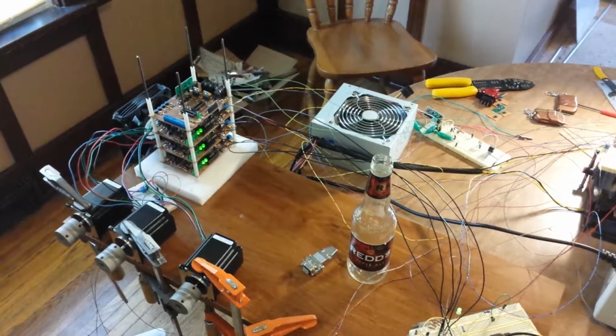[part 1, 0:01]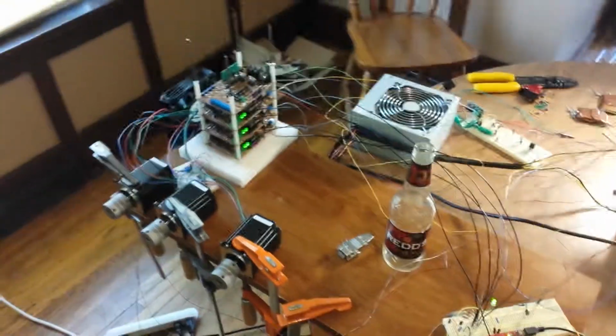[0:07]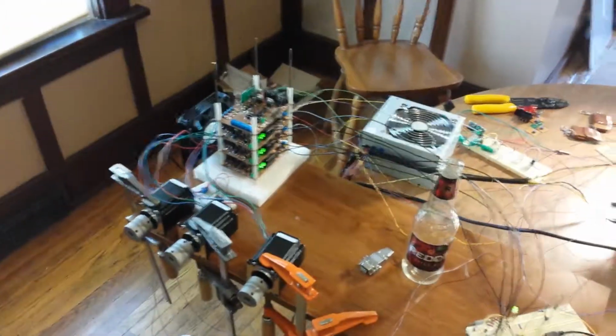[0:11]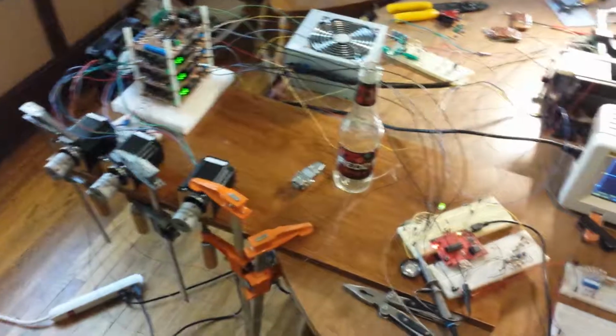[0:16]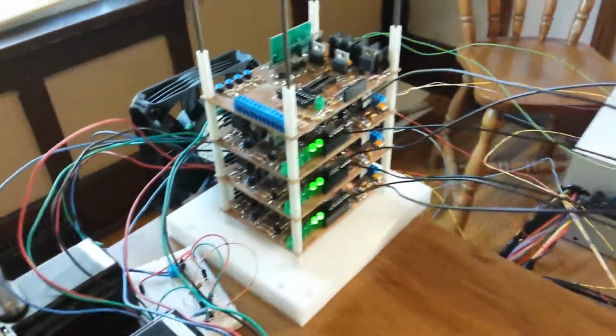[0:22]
All right, here is the full triple H bridged control circuit for our wheelchair lift. So we basically have here four circuit boards that are controlling this mechanism.
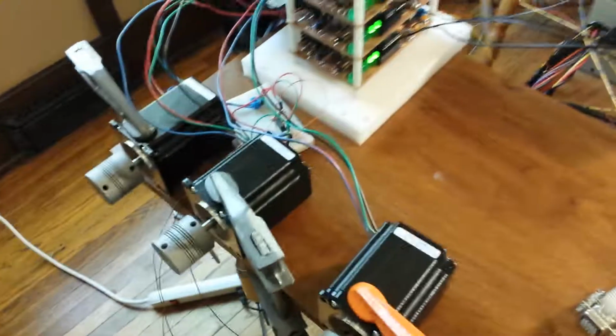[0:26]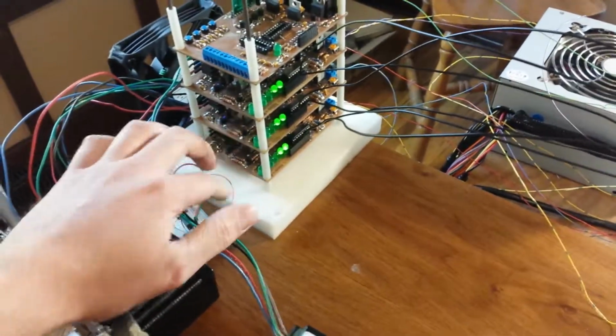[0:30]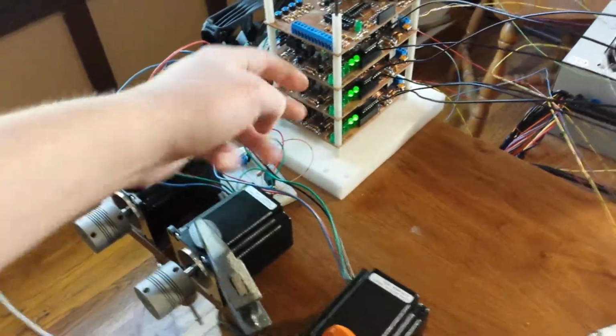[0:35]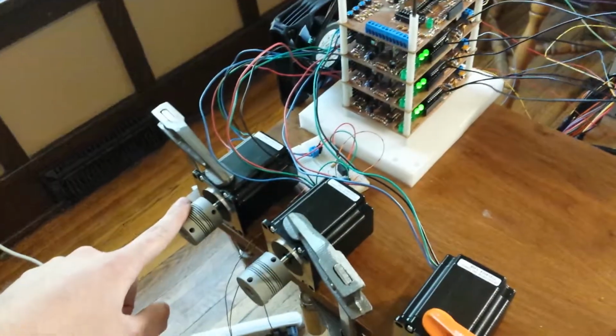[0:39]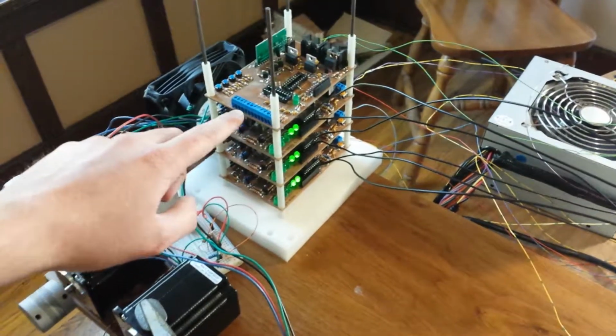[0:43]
Three on the bottom are H bridges. They control each one of these motors individually. This bottom one controls this one. These two control these other two. These will be on the sides of the mechanism. This one will be on the top of the mechanism. The top board here is the motherboard, and it is controlling these three boards below.
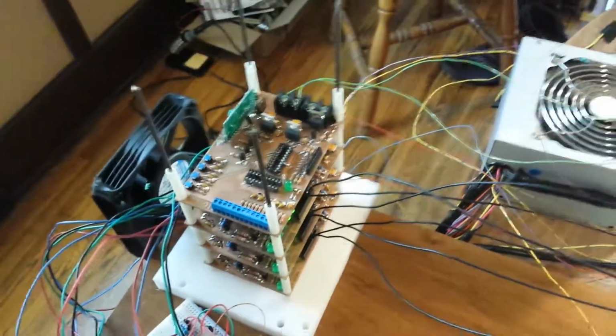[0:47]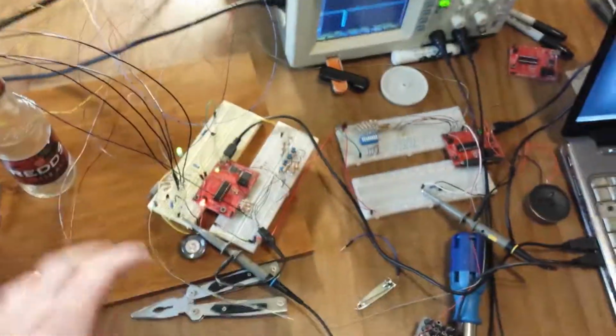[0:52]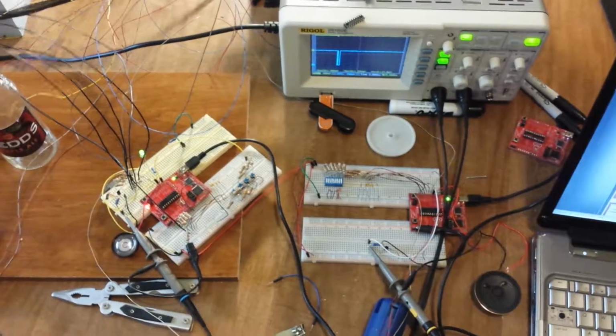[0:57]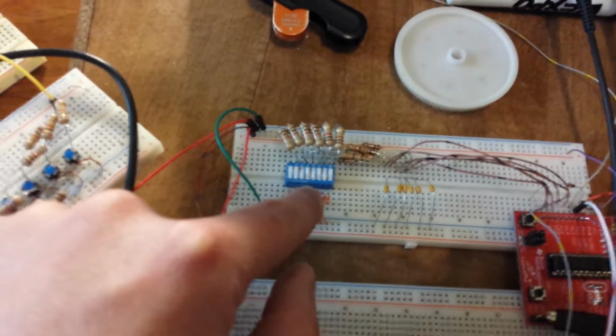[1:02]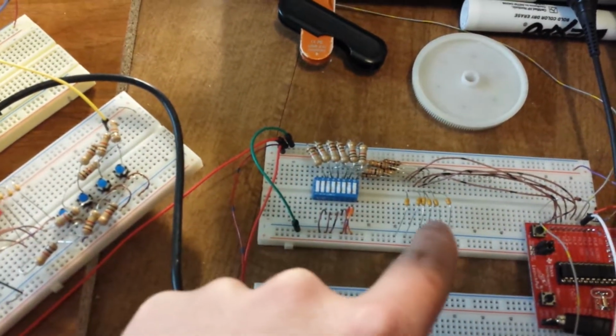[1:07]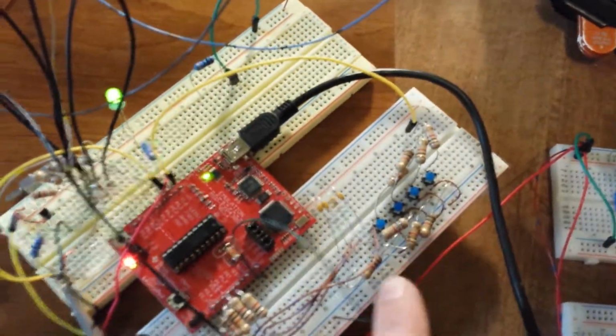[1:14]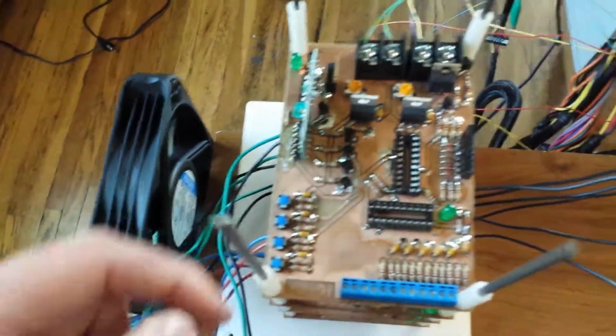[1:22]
Right now, it's not operational because I don't have all the software done. But this is that motherboard, all on the breadboards here. So this blue guy here is our limit switches, and here's the signal filtering circuitry. And then we have our four input buttons from the user, and those are right here, and their filtering circuitry, and that is this stuff right here.
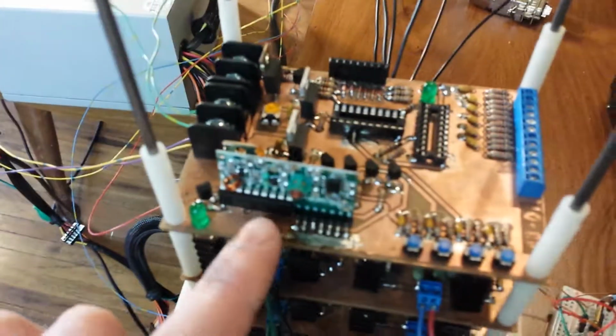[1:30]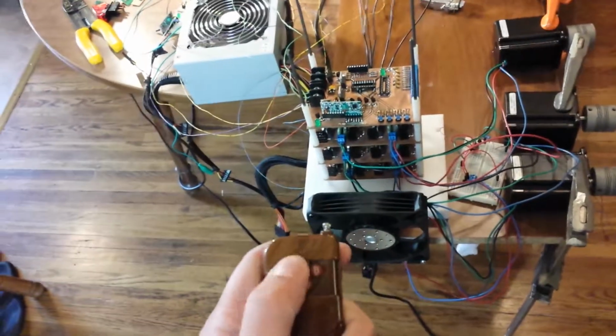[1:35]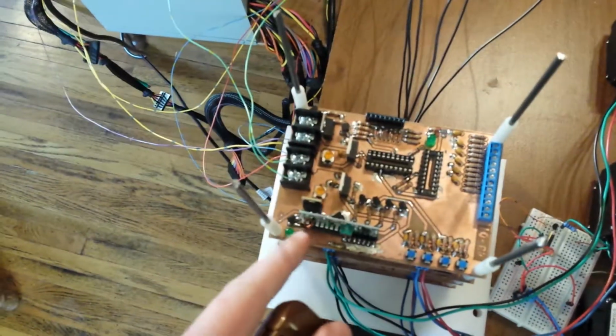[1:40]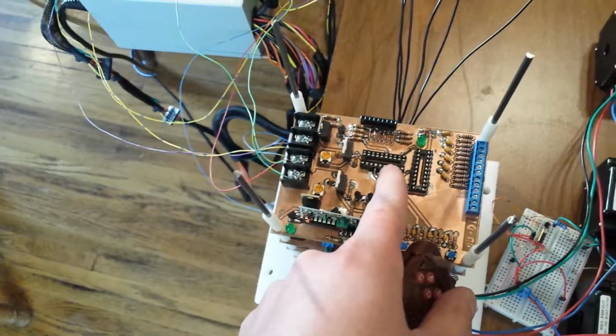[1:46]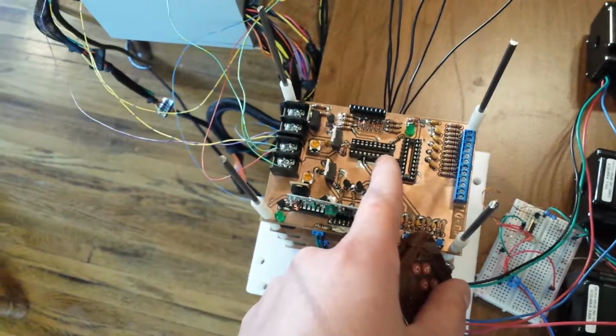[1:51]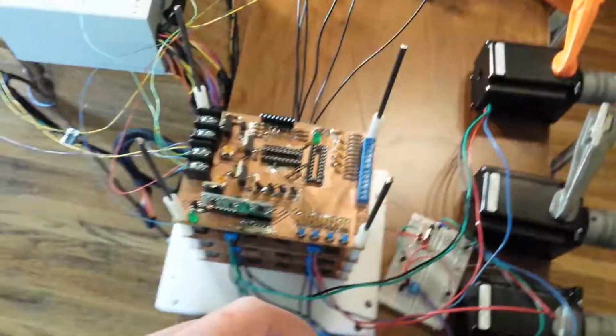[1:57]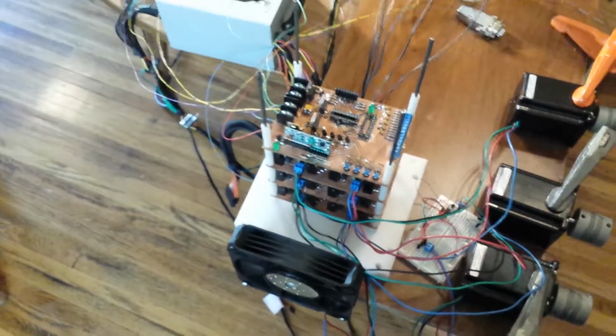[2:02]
In addition to this circuit over here, I have a radio control module, and that's this guy right here. That takes radio signal from here, and I can turn on that LED, and eventually all these signals go through these transistors, which will allow the pins on the main motherboard, or mother microcontroller, to drop down to ground, which would signal a button press. That allows us to do this wirelessly, which is pretty cool.
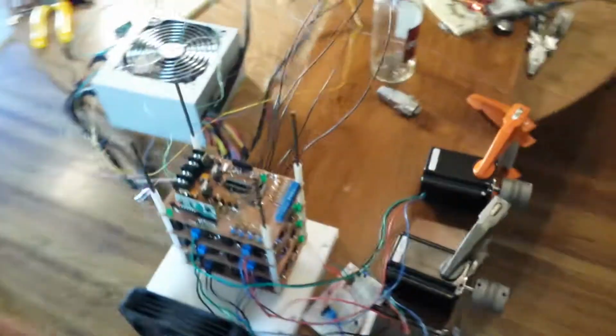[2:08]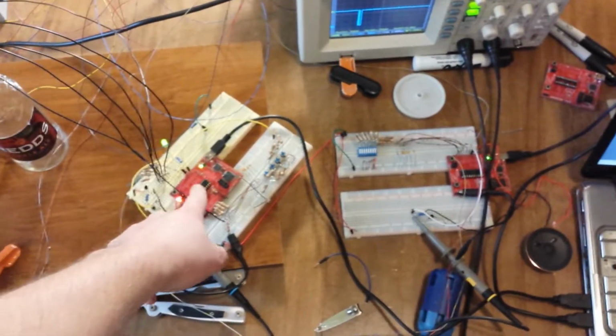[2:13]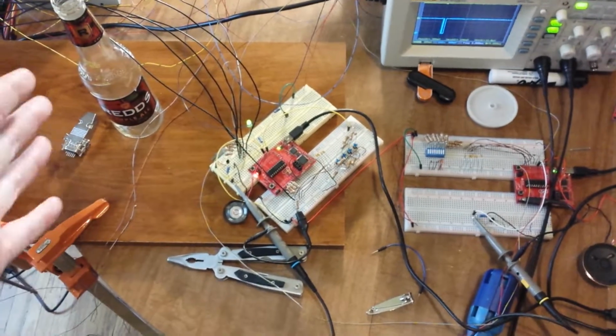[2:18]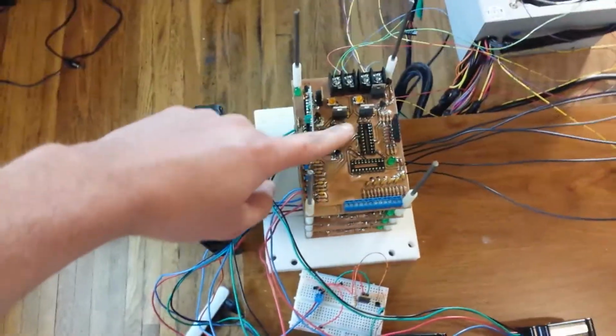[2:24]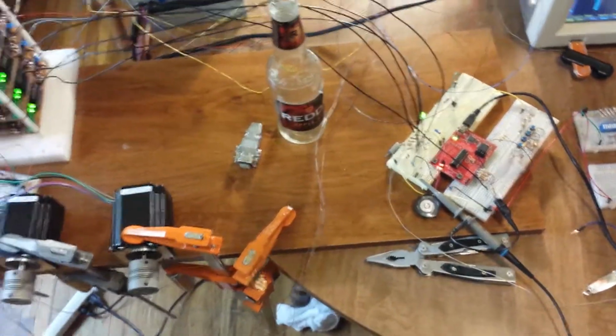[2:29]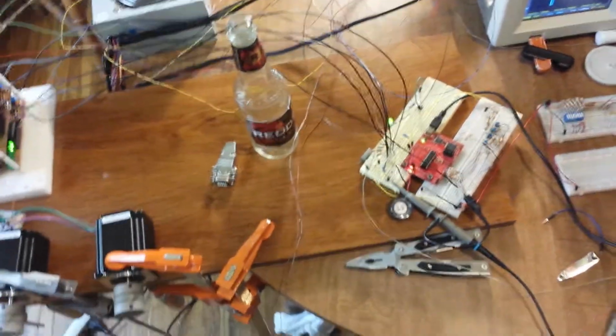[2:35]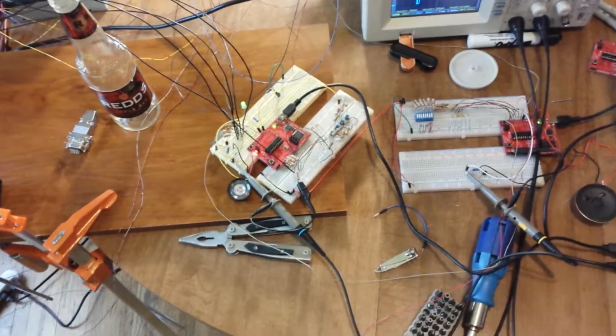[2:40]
What happens here is we have this guy, the main microcontroller. It's doing pretty much everything, and that guy will be right here. It sends the signals to each one of the H bridges. It takes the input from the user and from the radio control, which is essentially the same pin, and then it takes those signals and it does stuff with them.
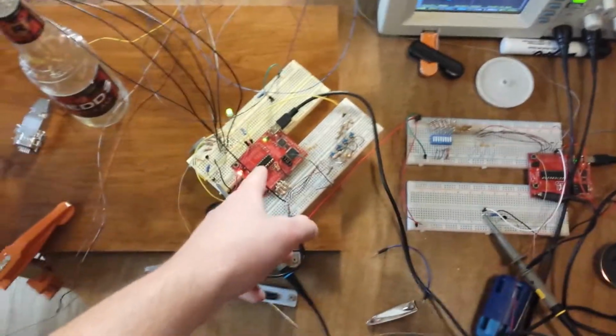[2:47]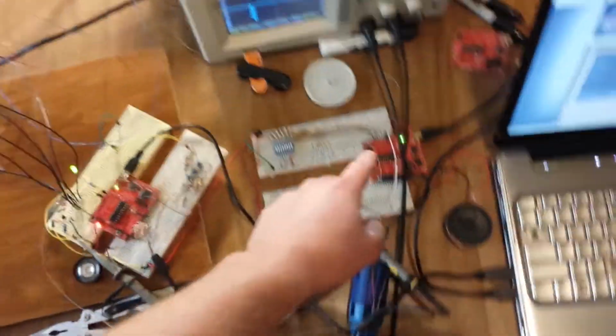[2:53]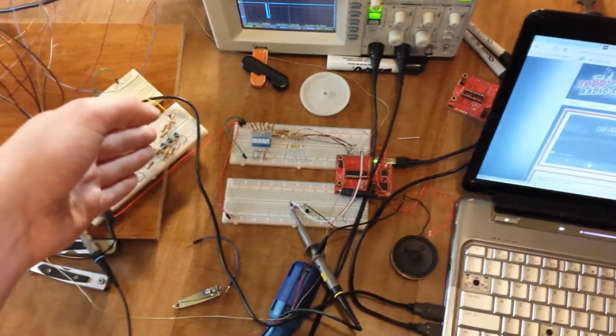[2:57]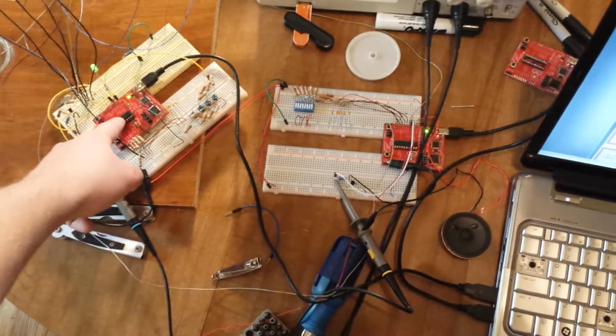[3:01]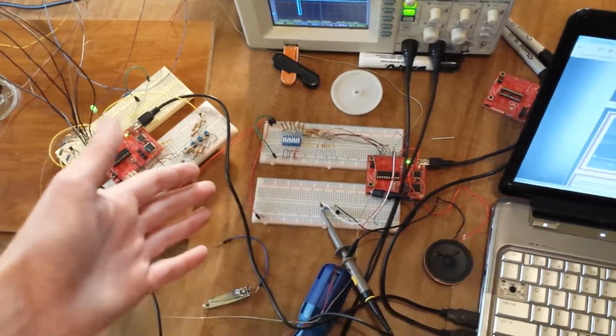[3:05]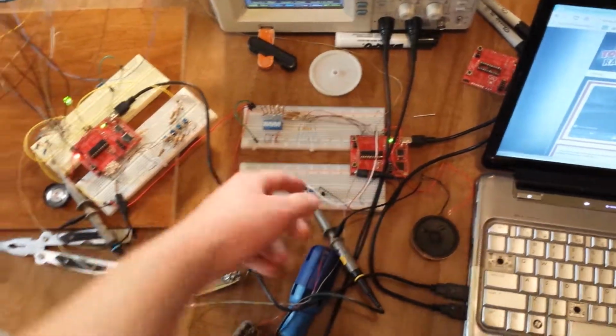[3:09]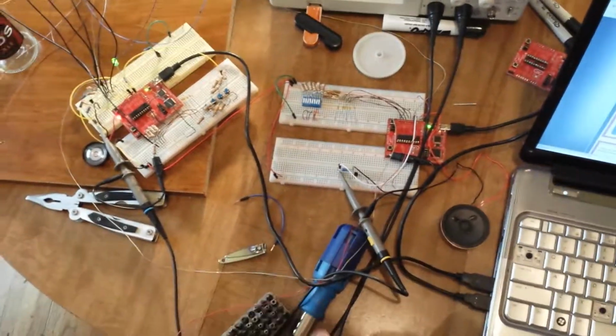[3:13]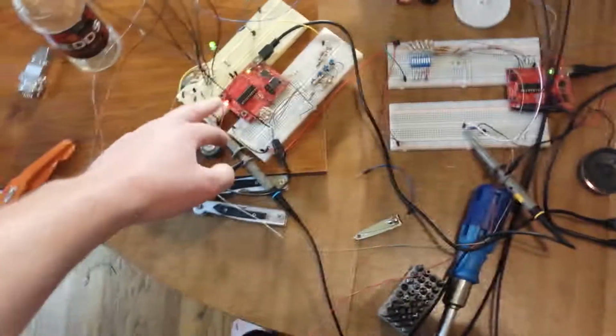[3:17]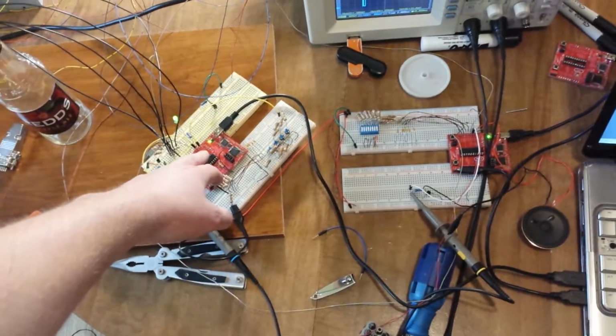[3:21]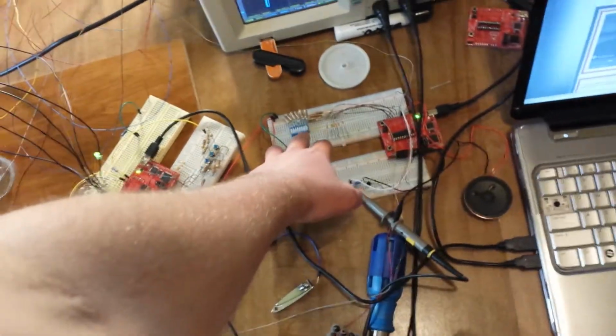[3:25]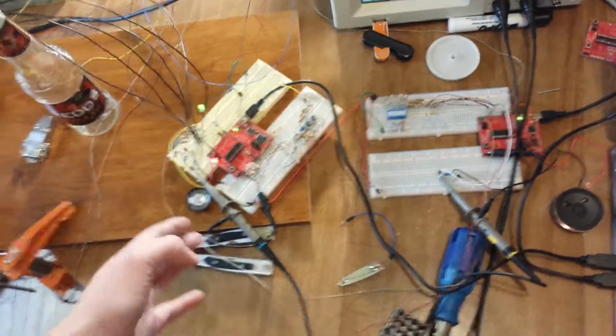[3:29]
And what this other guy is doing: I don't have enough pins on this one to actually do the whole operation. So what we had to do is introduce another microcontroller. This guy literally just watches the switches. And when something happens, or when it gets asked from this motherboard, or if these change toggle position, it sends an information byte. Or actually, they communicate more intricately. They communicate with each other, and I'll show you that on the oscilloscope here in a second. They talk to each other and say, hey, something has changed, and here's what it changed to, and this guy does stuff with it.
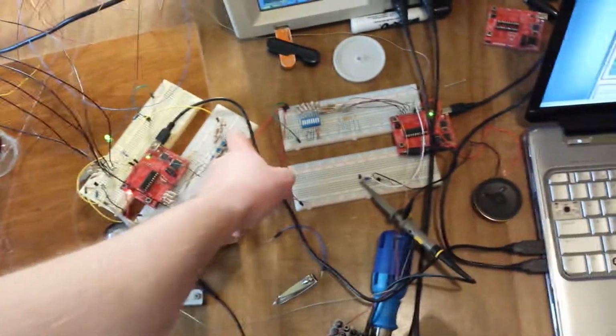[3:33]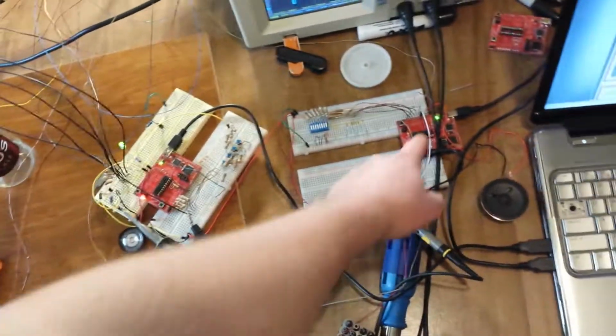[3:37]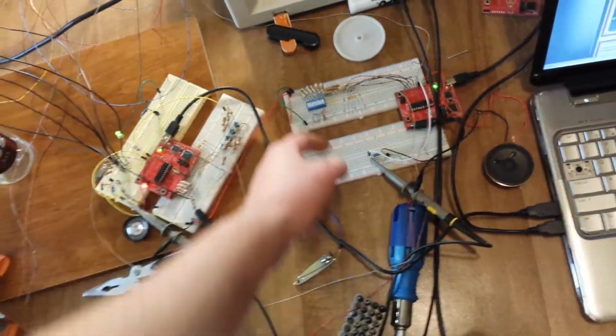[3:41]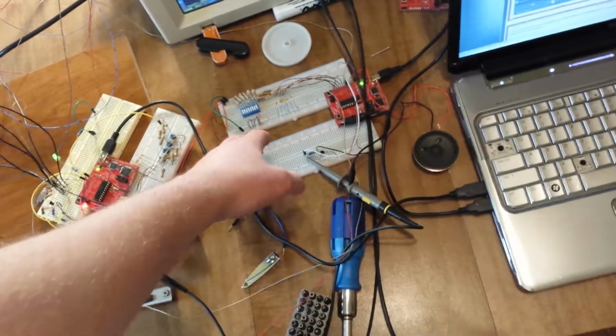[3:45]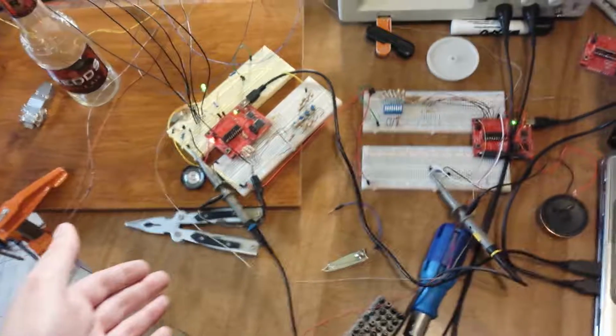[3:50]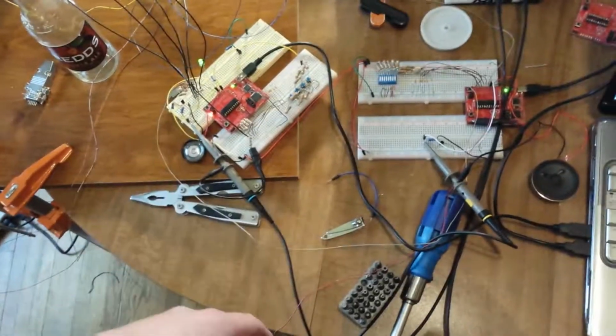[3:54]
In addition, when the user pushes a button, the first thing this guy does is send a byte, an information byte. It queries this guy for the switch information, and when it does that, it reads those and then allows certain things to happen on here. Because basically we don't want the wheelchair lift to go the wrong way or break the mechanism, so it needs to check that with limit switches.
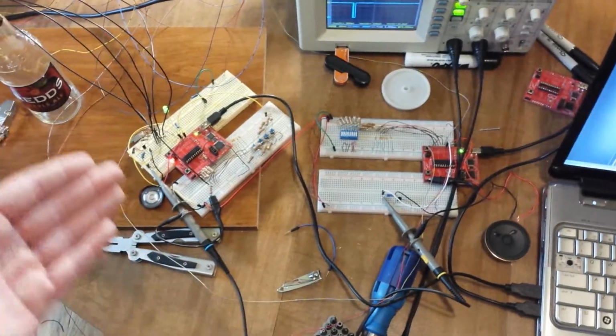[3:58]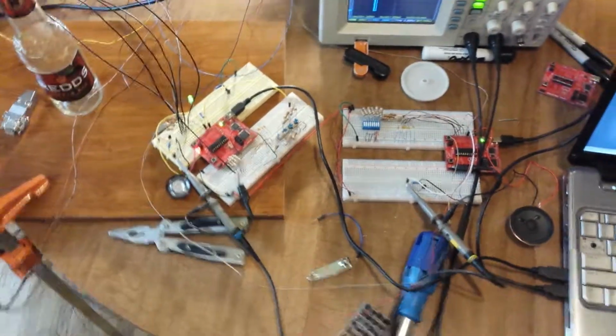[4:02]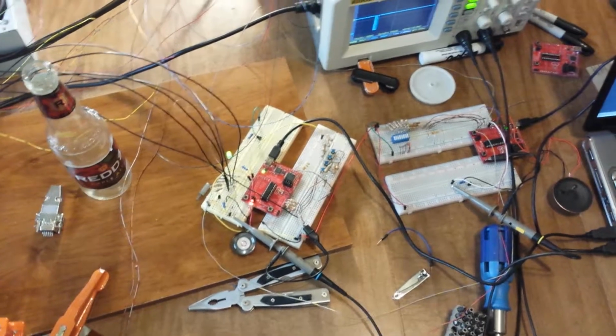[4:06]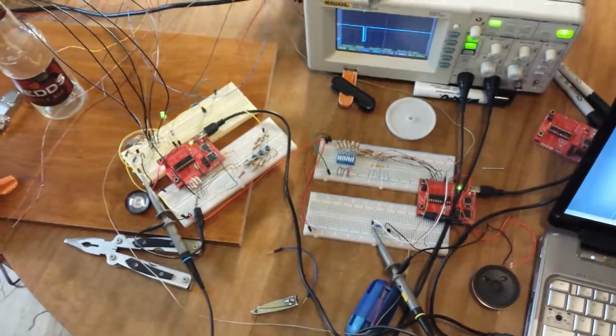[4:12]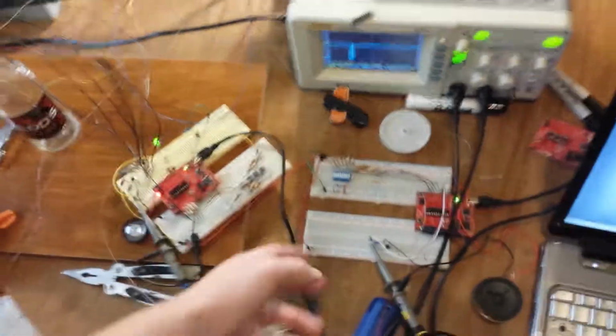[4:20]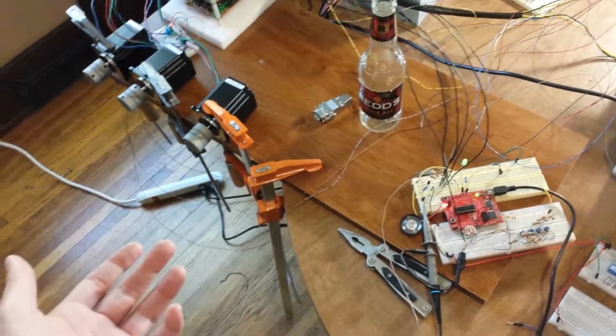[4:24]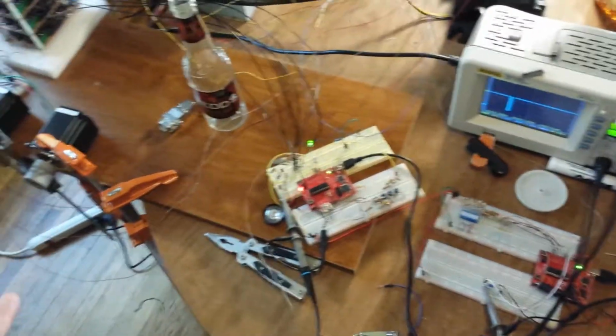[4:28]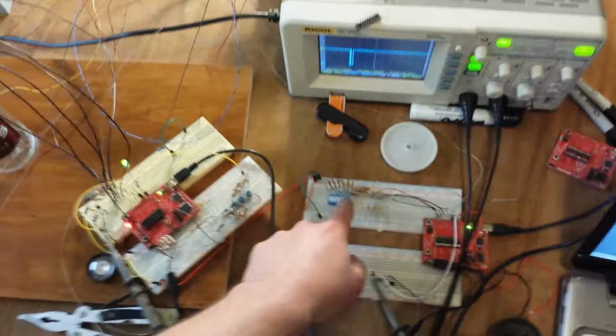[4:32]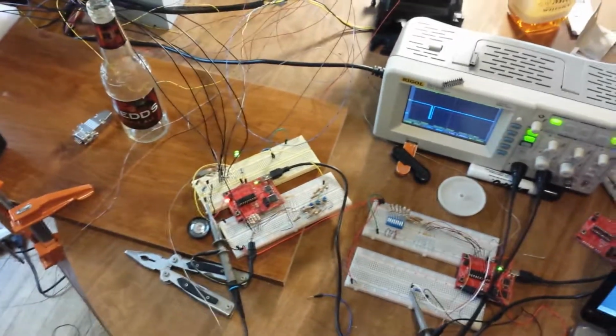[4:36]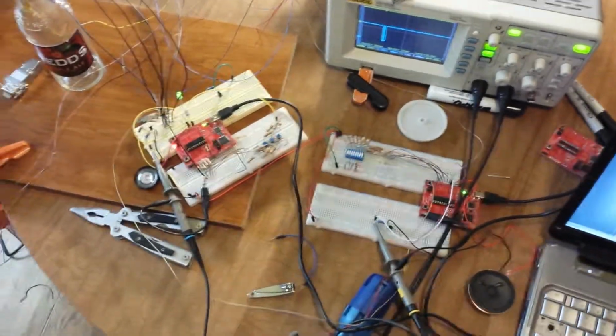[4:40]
Eventually I would like to have rotary encoders to actually sense the position of these motors down to, let's see, a thousandth of a revolution. But those are expensive and the company didn't get back to me in time. So now we just have resolution on the ends of this thing, and that's why we have to use stepper motors, because we have no rotary encoders to see where we are. So we have to send discrete steps to the stepper motors and hope that it gets there. And hopefully these limit switches at the end of the tracks will allow us to know our home and end of the cycle.
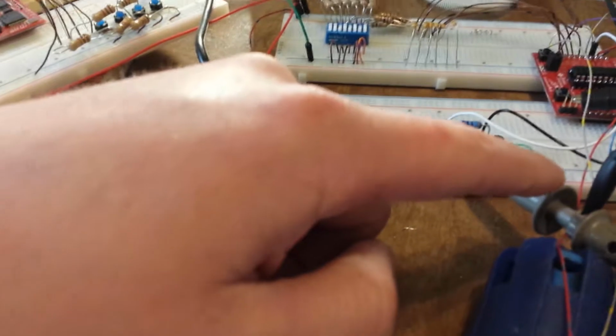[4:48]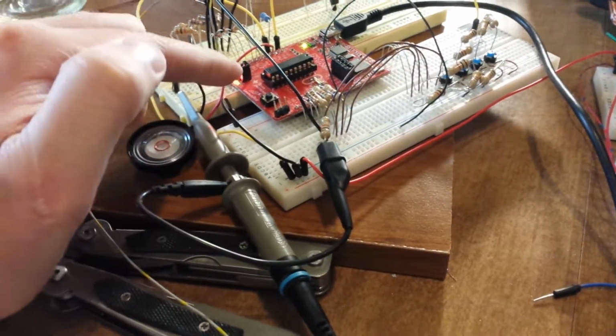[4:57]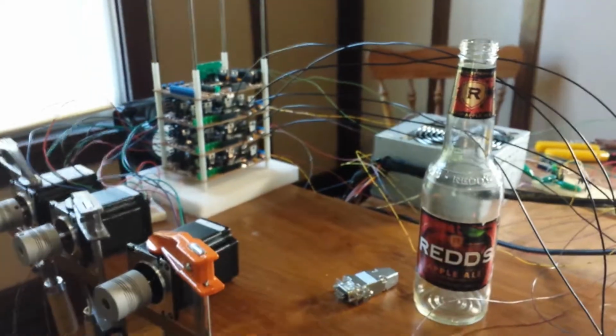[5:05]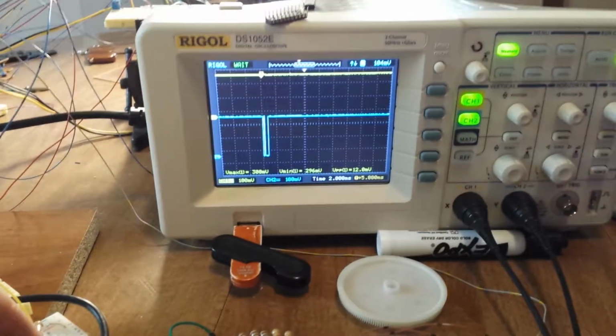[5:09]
So what happens between these two is we'll have the oscilloscope channels: yellow will be the switch controller, and blue will be the motherboard, or I guess the main microcontroller. Right now I have the H bridges off. They're not being powered, so this isn't going to actually do anything with the motors, but you can see on the screen here on the oscilloscope what's happening.
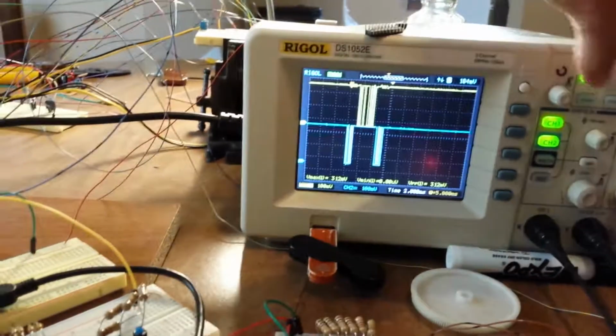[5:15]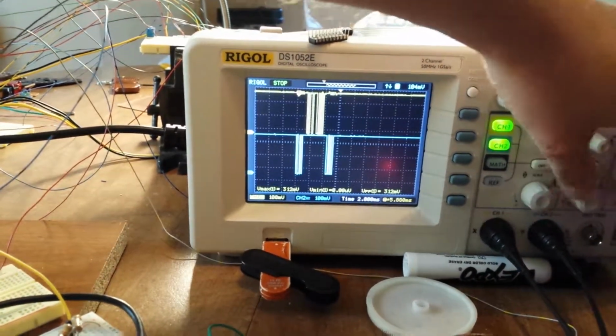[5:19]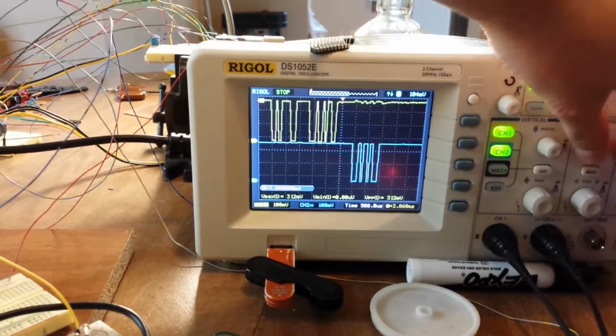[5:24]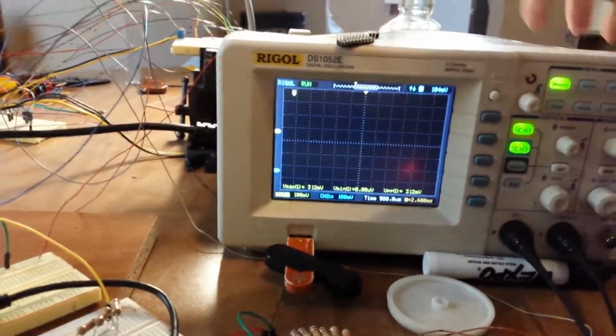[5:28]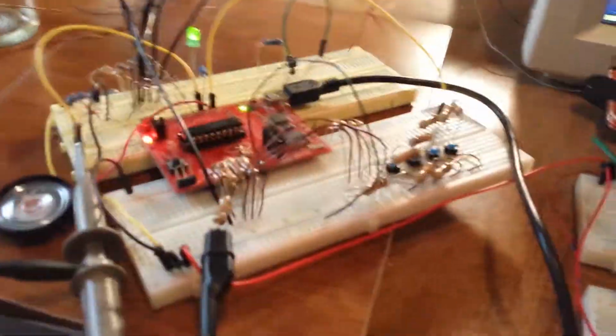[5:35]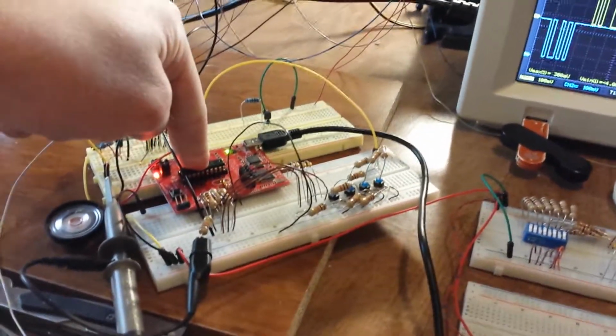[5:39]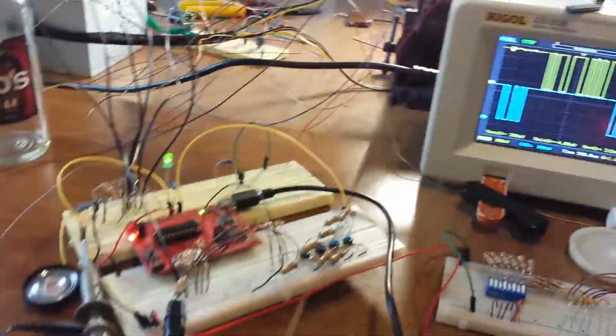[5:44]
Okay, let's do that again. Hold on. Okay, so what happened here is when I pushed that button, this chip registered it and said, okay, the user wants to do something. But let's check and see what we can actually do first before we actually do anything.
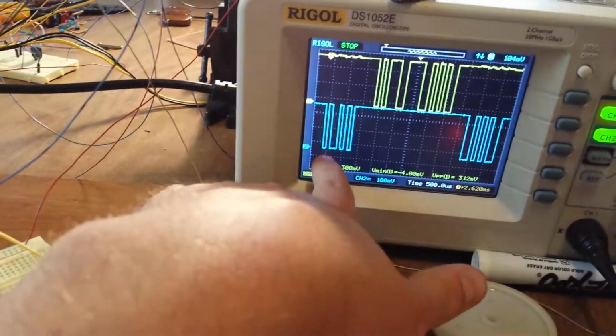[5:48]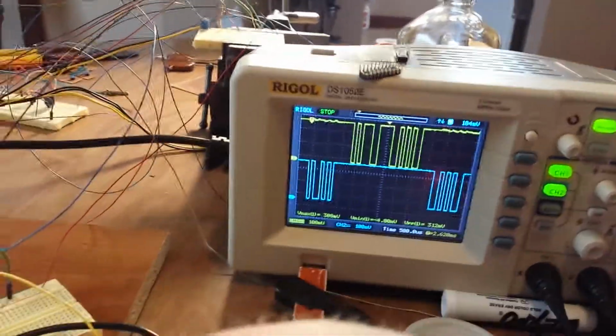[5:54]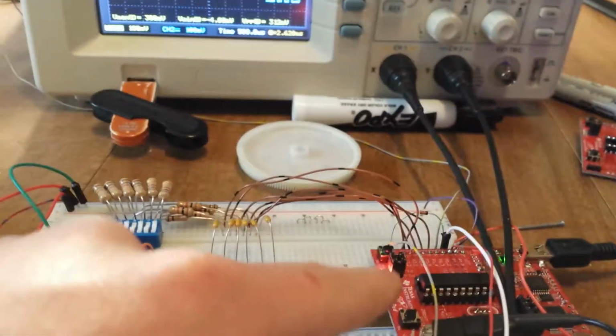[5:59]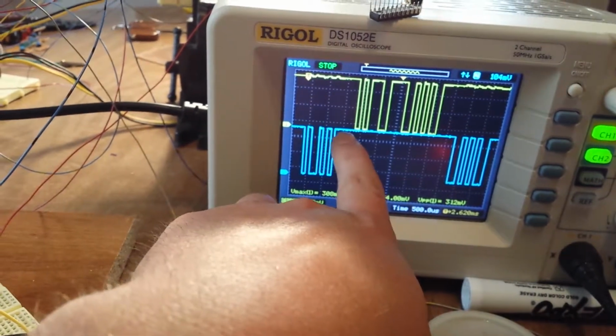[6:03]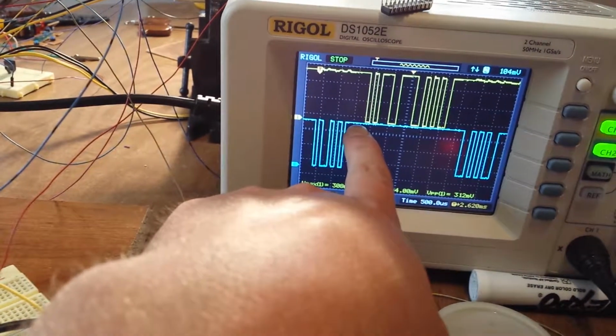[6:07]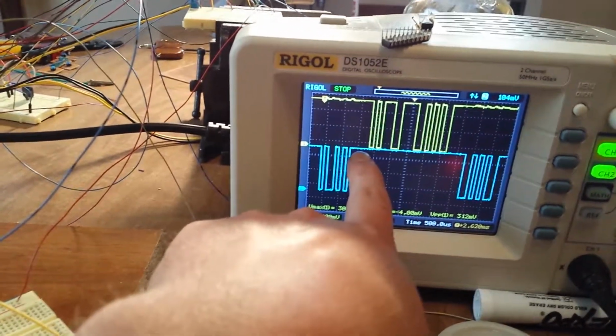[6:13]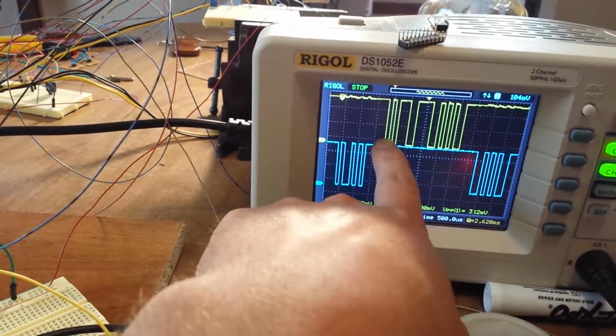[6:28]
So that's what this blue byte is. What it does is it sends a predetermined byte serially over UART to this controller. This controller reads that information. That's what this time delay is right there. It's reading it and determining what this is, because this could be anything, since there are several different commands. Then it chooses what to do with it, and it turns out this means send me the information on the switches. And that's what happens here. This guy is kind of like a doorbell.
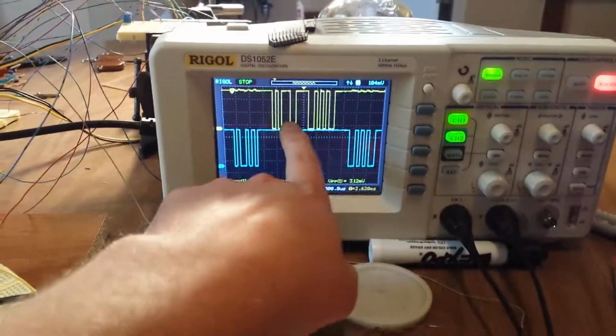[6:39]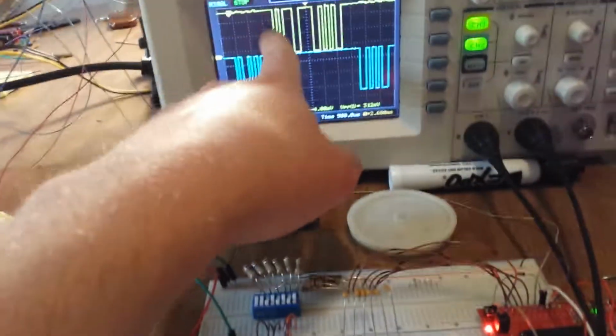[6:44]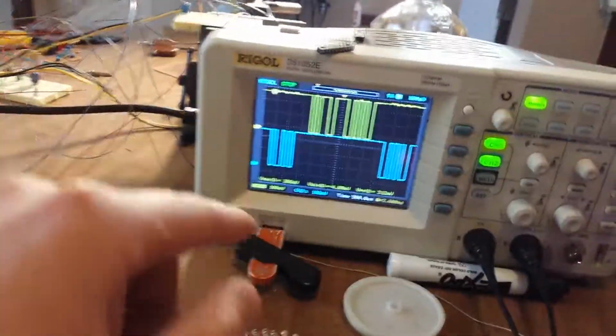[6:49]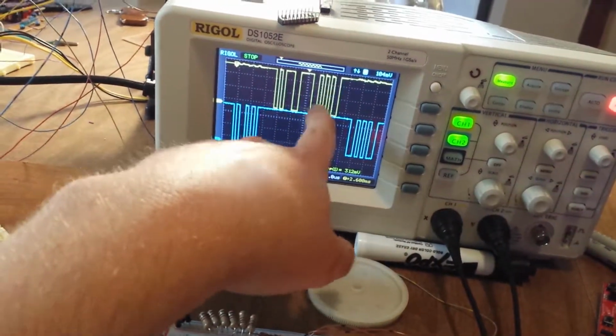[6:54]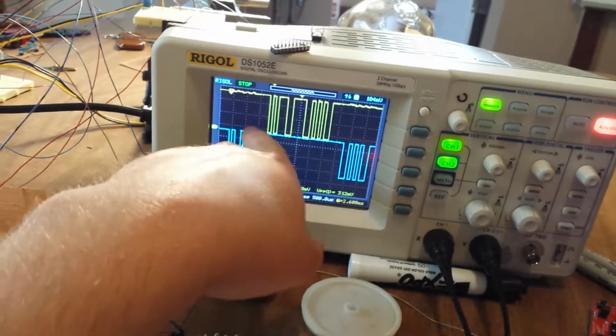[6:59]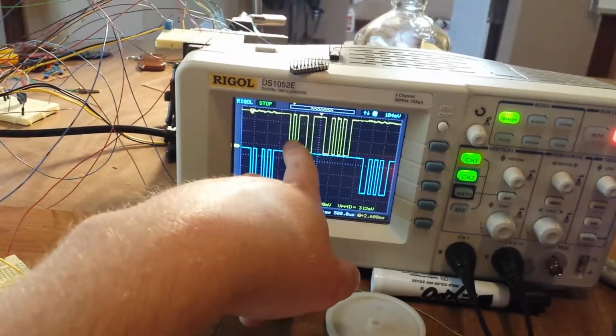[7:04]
So this is also a predetermined code, this is a predetermined code inside this guy and this guy. And what happens is when this microcontroller sees this, it knows that the next thing is going to be the switch information, which is this. So this is the doorbell and this is the actual information. And these things have different signals that they're sending. So we have to have like a doorbell guy saying, or it's kind of like an address. It's an address is what it is. So it says, this information is associated with this
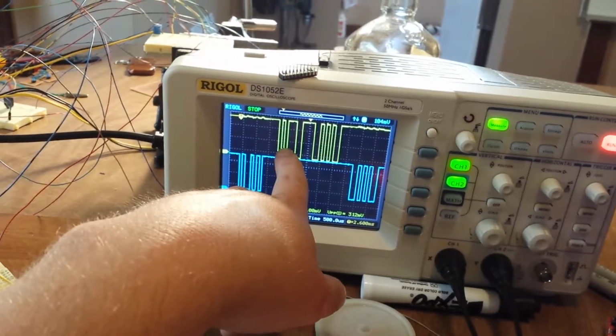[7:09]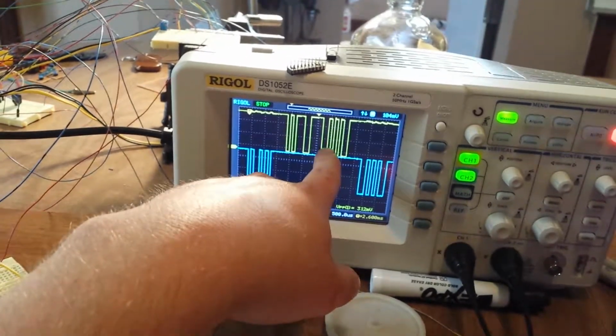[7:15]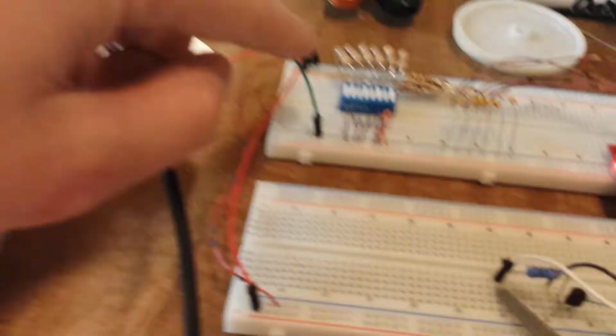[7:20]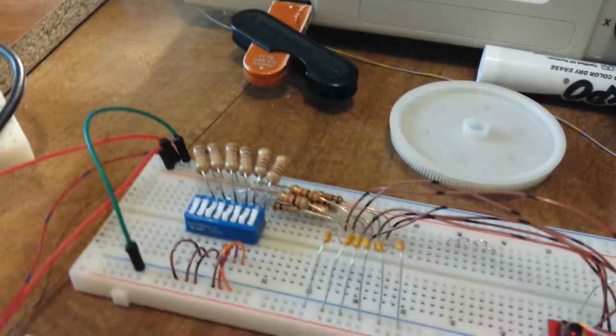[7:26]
What we're trying to do, I guess. I don't know. Anyway, so this is the positions of these switches right here. So these guys, I don't know if you can see, some of them are on and some are off there. That's a better shot. So that is associated with that right here.
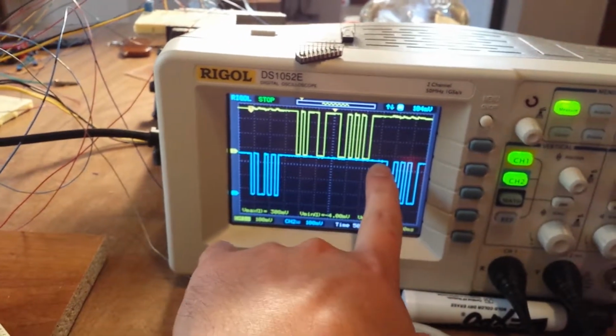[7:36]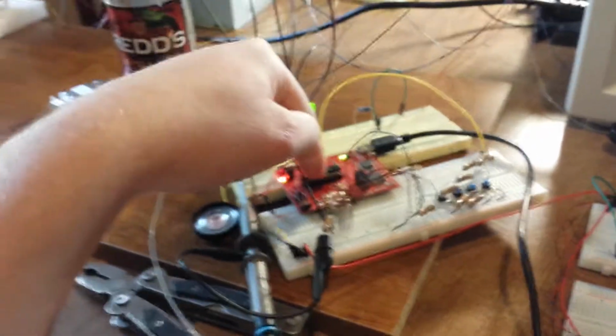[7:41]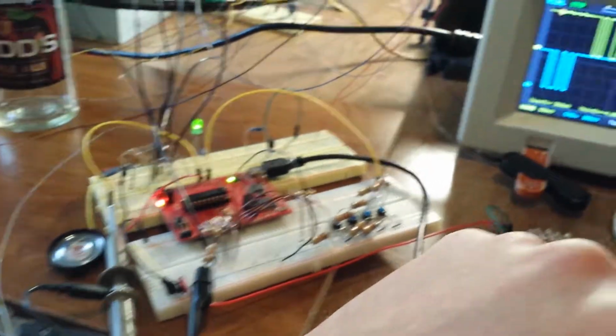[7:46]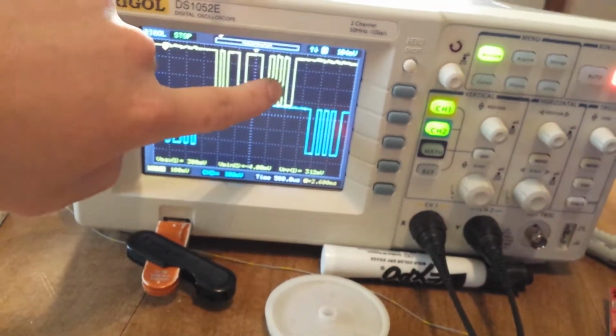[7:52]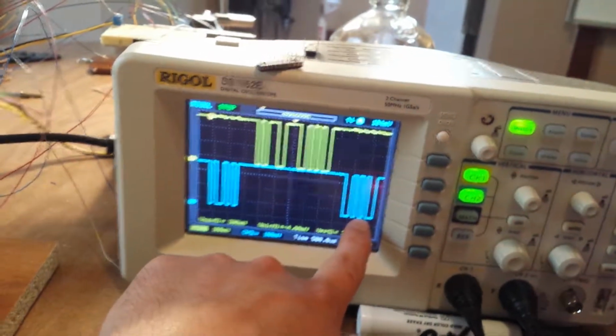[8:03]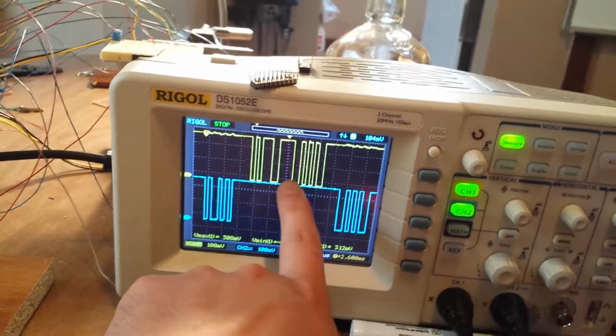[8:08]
And what happens next is this time delay here is this microcontroller decoding that information, kind of taking the information apart, figuring out what it means, figuring out what it's actually capable of doing. And then it replies back with this. And this is an exact copy of this. And what happens is this microcontroller reads that information and says, okay, this is what the other microcontroller thought I said. And here's what I actually said. If this doesn't match this, then there's a serious problem and we need to resend the information.
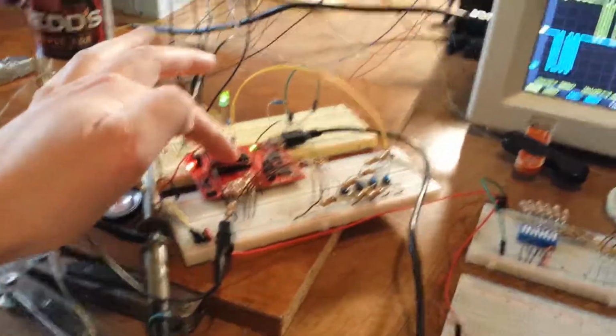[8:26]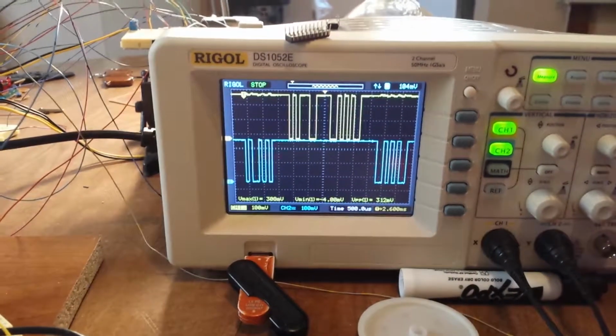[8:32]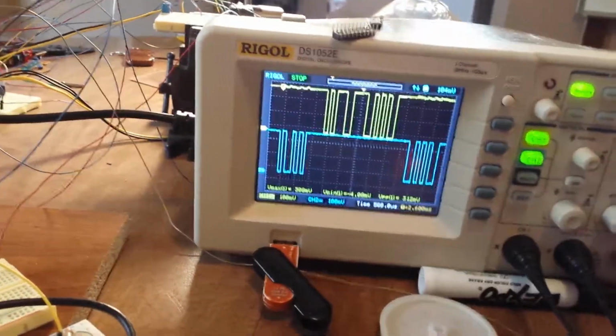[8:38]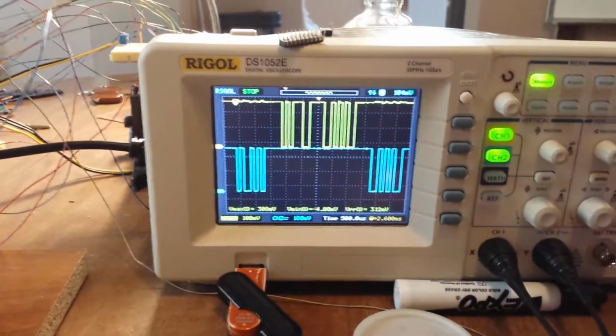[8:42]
So what it does is if this information was incorrect, it would send this whole information again, it would resend this until it got it right. And once it has it right, then it's able to do other code. So really this is like a handshake between the two controllers, making sure the information is correct and there's no errors in the transmission. And once this is over with, they know what they can do from then on.
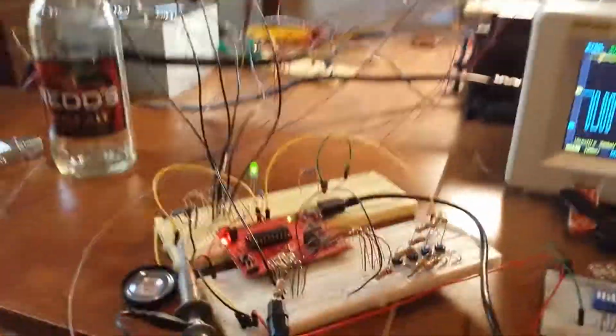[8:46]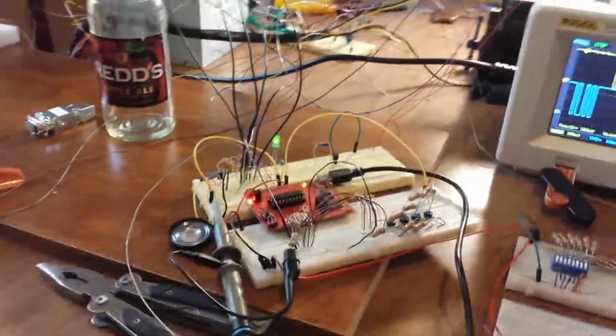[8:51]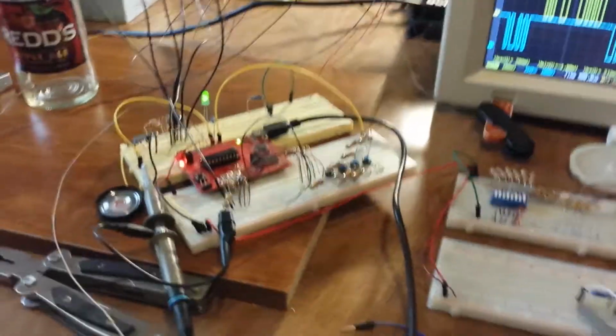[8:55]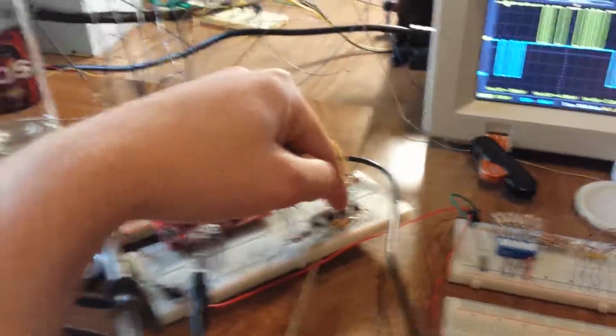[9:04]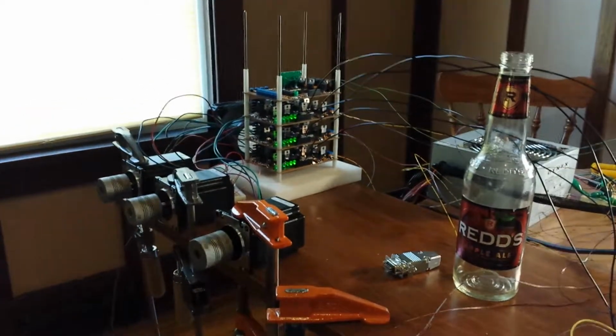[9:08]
And so let's actually see this baby run. Okay, so we got booted up the H bridges, and these guys are ready to go. We're gonna push one of these buttons, and I think it's this one. It shouldn't do anything. Nope, it does. Okay, so that was okay. The limit switches are in the correct position for there to be motion.
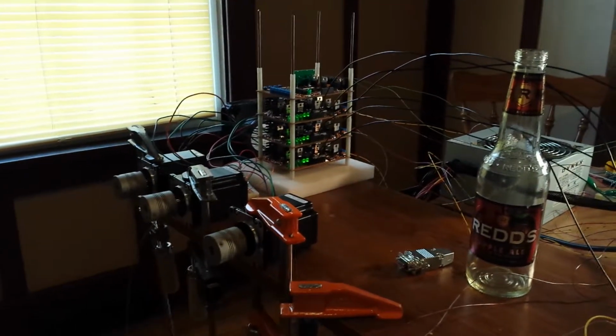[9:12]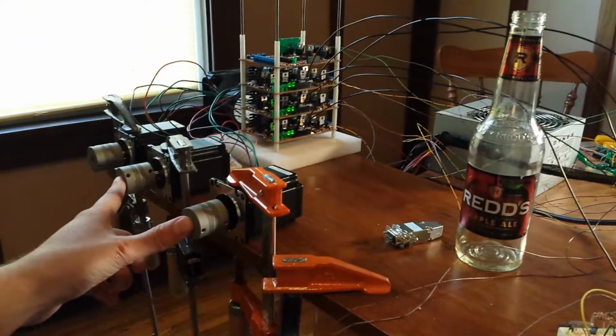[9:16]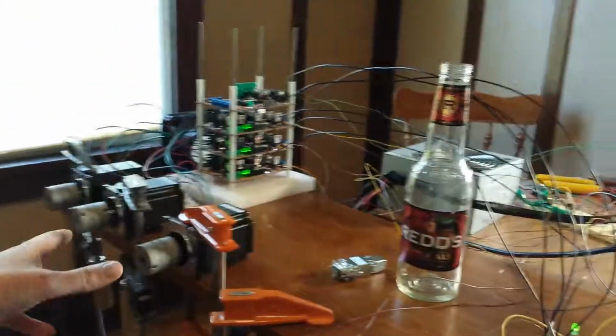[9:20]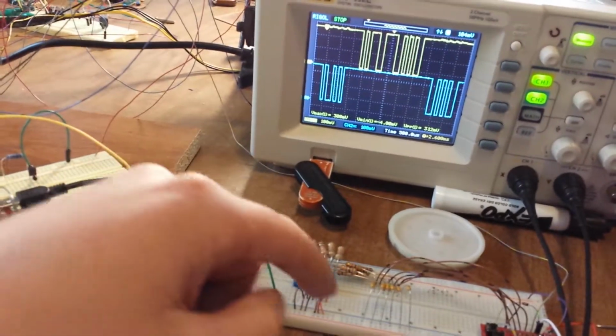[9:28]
I forget which button I pushed actually. So these two motors are running on different frequency than this. So we have different torques and different RPMs. So the fan is automatic too. That's also sent over the transmission lines. Basically it turns on the fan when it's okay to run something, and then it turns it off after a delay.
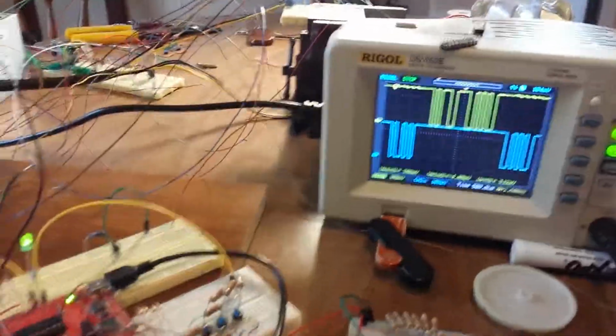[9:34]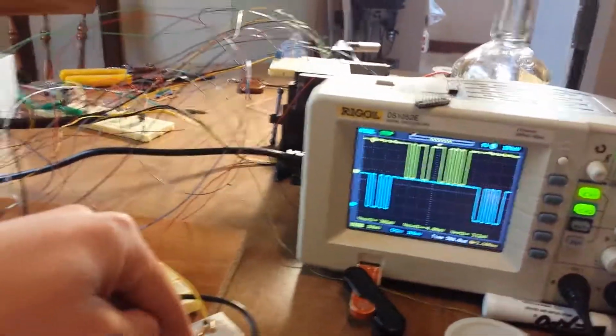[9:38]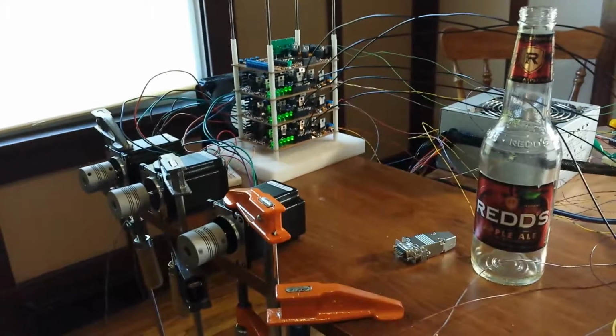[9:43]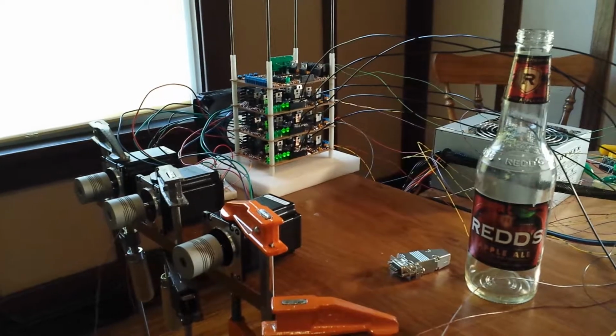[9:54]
Okay, let's try this other button. Is this the one I pushed? Not yet, it's the one I pushed. Next time I'll push this one. So it's going to run through the cycle again. The fan boots up right as we go, and then if you notice, as soon as everything's done, there's about a 5-second delay, and the fan shuts off.
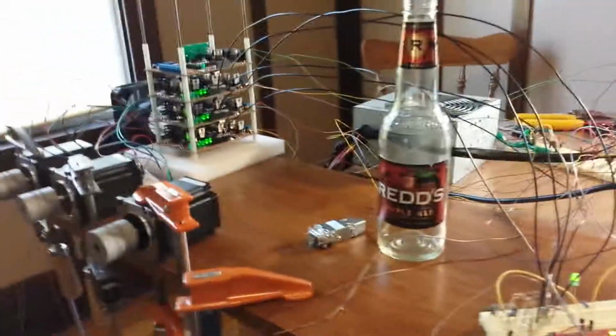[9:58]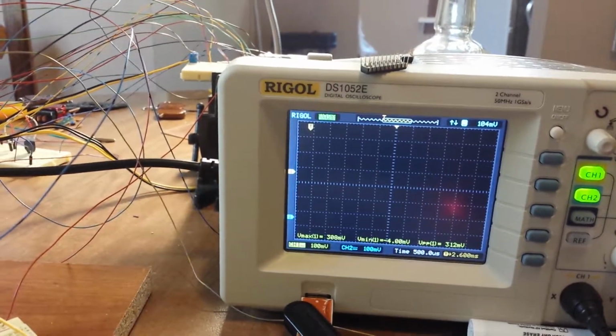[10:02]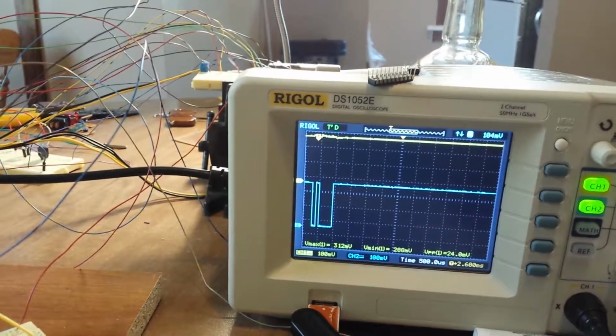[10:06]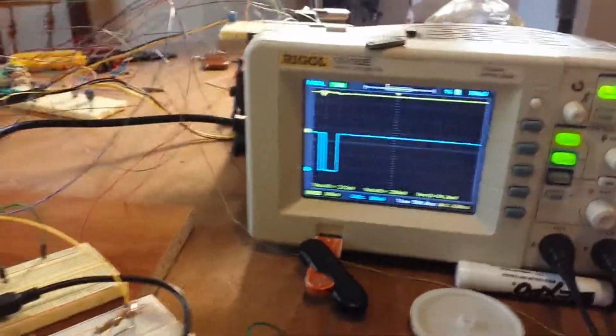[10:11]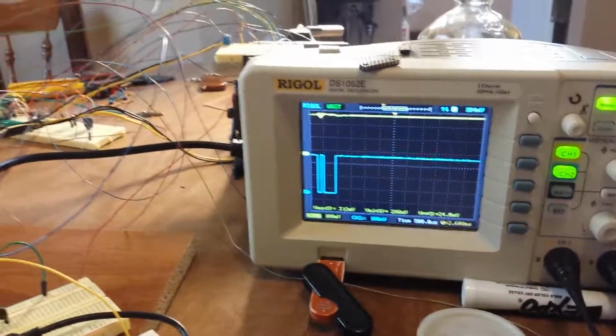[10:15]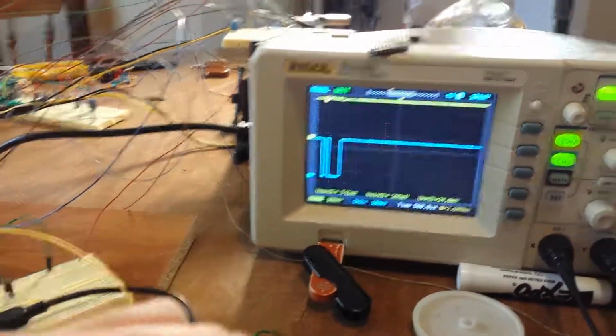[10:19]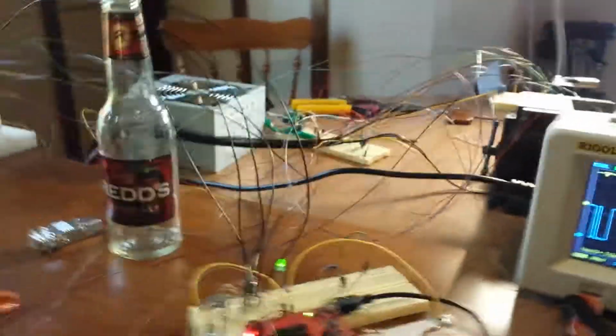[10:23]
Oh, let's see here. So that's going to be on here. As soon as it goes, you'll hear a click. There it is. So this is, basically that's an uncritical command, and this guy just sends it and doesn't care if it actually gets heard. I mean, if the fan's on, it's on as of now. We'll implement error code later anyway. So everything's off. Now let's try this lower button.
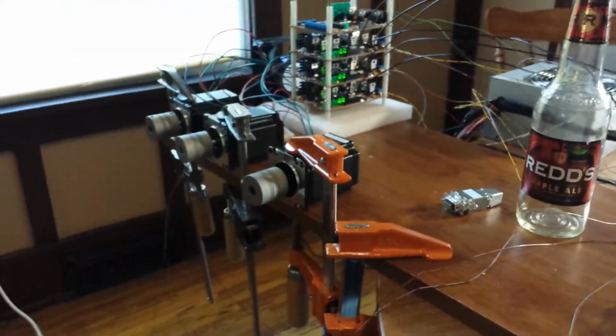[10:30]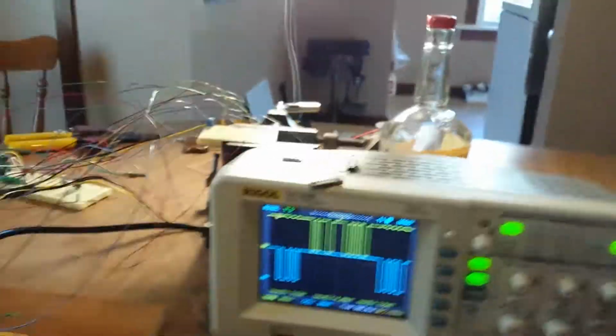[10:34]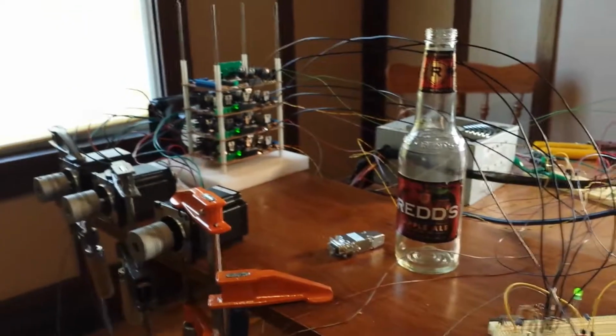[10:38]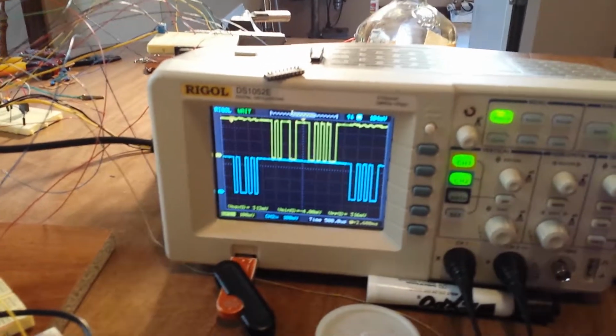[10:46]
And those limit switches are still in the same position. And if you noticed, I think those were spinning clockwise. So let's push it again. Nothing. It means that the mechanism, the virtual mechanism, is in a position that it does not like, and it will not actually allow that command to happen. It still understood it perfectly fine, but it just doesn't allow anything to happen. So you can see it's getting the information every time, but it just won't let it happen.
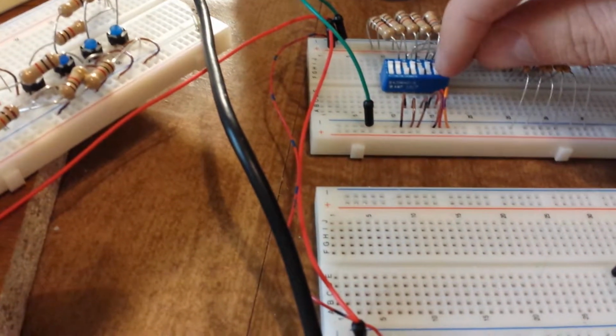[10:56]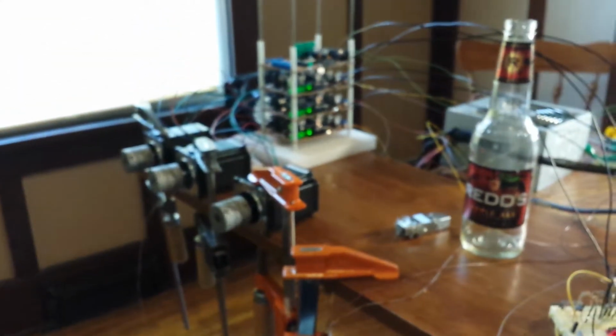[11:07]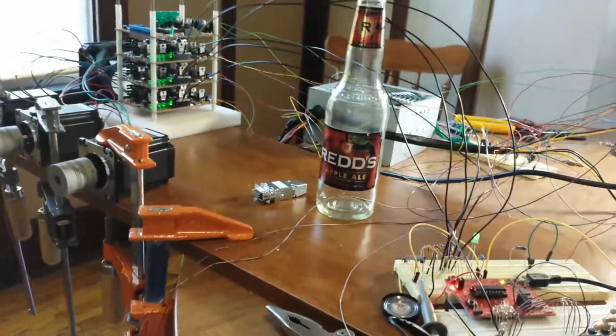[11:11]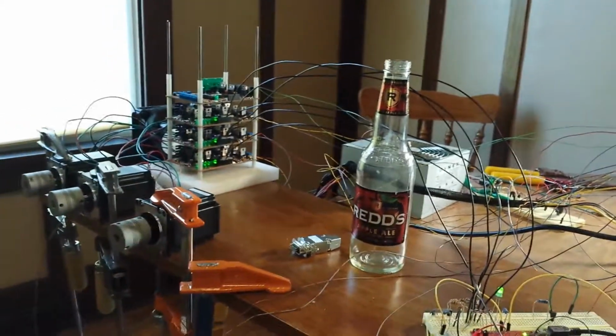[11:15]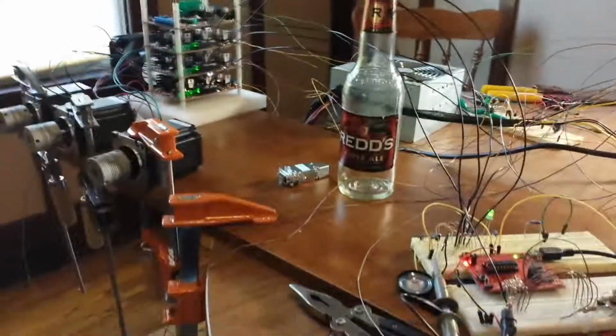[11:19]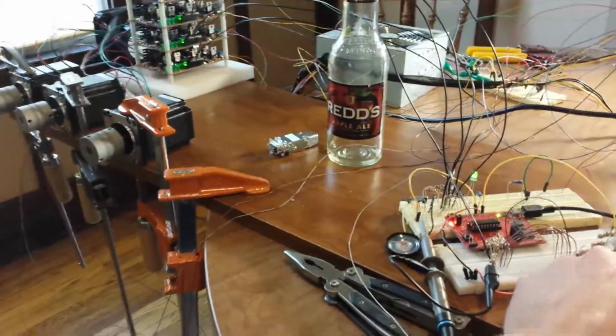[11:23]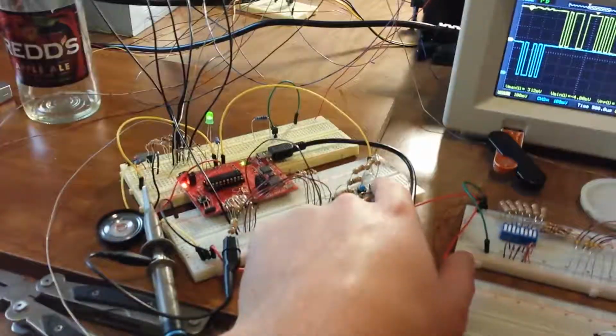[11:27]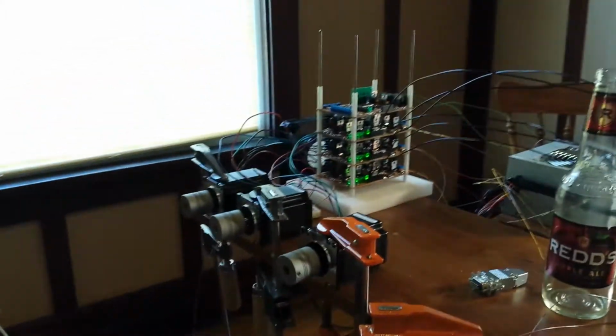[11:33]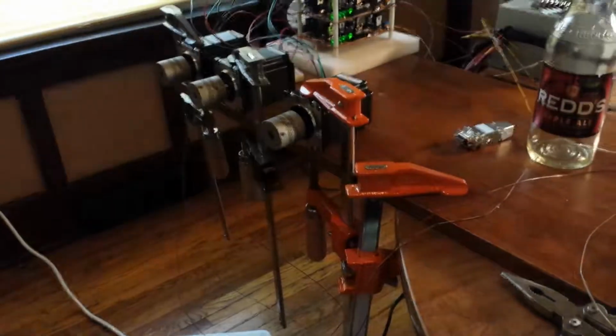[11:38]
Now let's change the position of these switches. Essentially, this is emulating the wheelchair sliding on the entire mechanism and being in the bottom position. So it actually waited for that, well, it shouldn't have actually done that. I need to take that out of the code. It was actually waiting for that to be true, and it shouldn't do that. Anyway, I'll try that again. So now the top button shouldn't do anything, and it's not. Now let's try the bottom button, and it should spin the other way. Yep. So, fan's on. Everything's spinning.
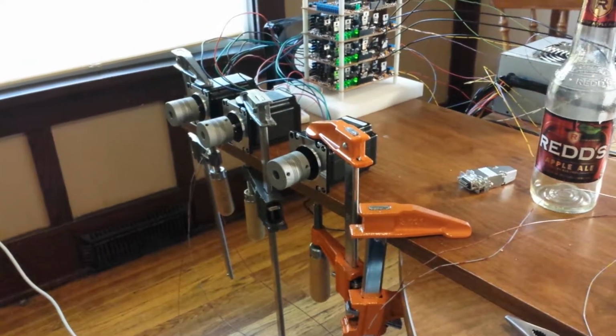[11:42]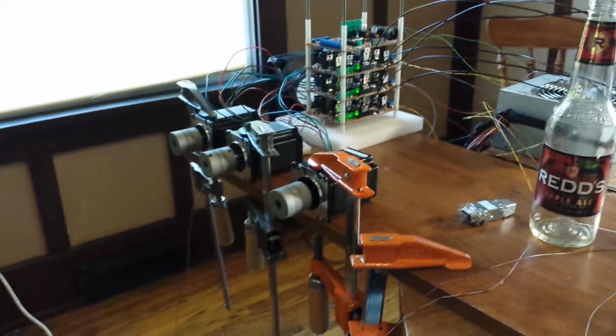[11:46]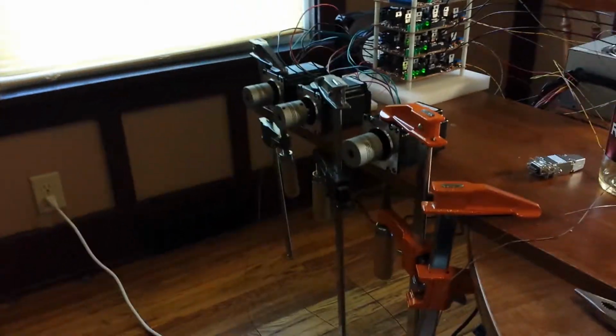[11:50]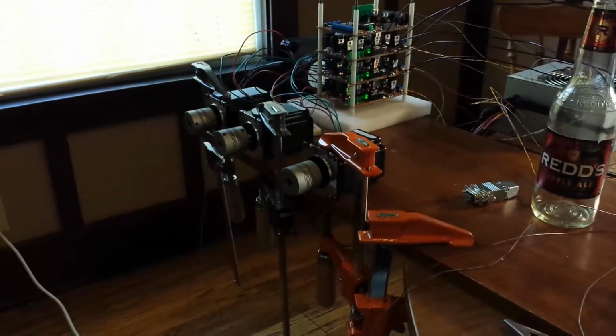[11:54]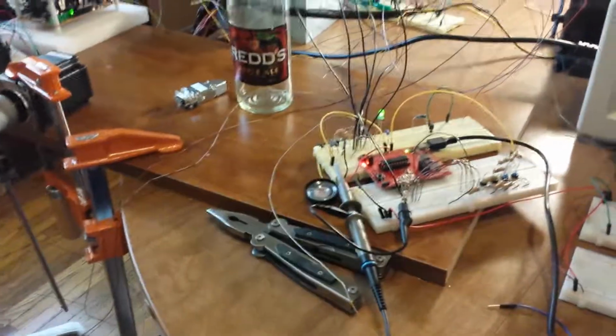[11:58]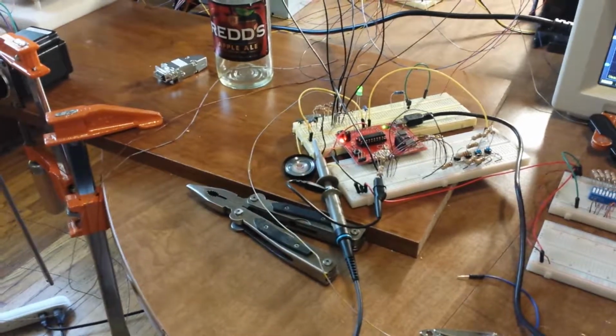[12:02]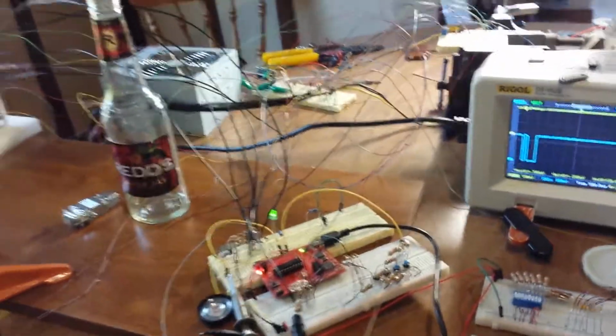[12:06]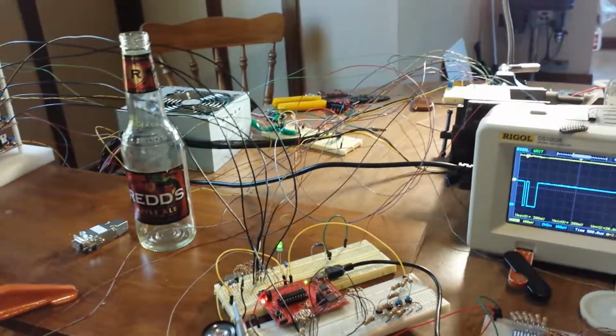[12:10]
And so that's basically the whole cycle. There's two other buttons on that radio, and two other buttons that allow you manual control, because these cycles don't actually work unless the wheelchair knows where it is. If the power gets turned on, or like power's lost mid-cycle somehow, we don't want these cycles to be able to run unless it knows where it is.
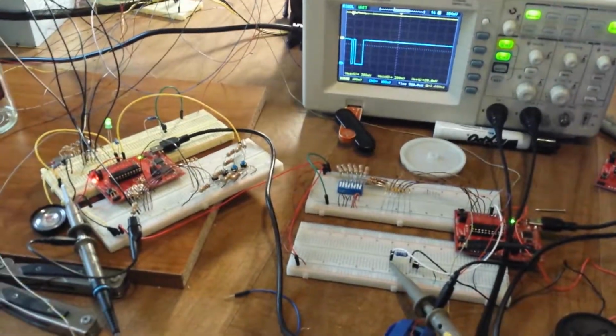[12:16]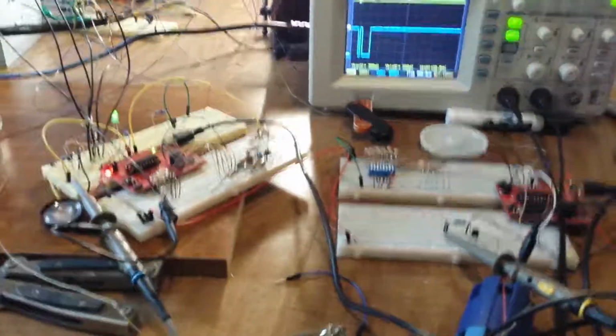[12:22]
So, that was 12 minutes, and our presentation is only allowed to be 30, and I could talk another half hour about this. Anyway, that's all we got right now.
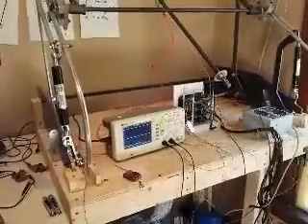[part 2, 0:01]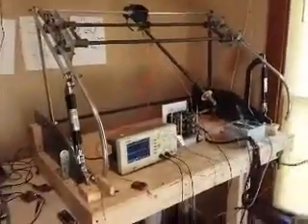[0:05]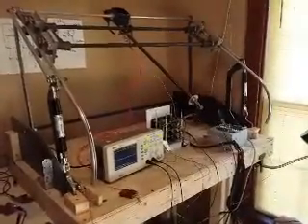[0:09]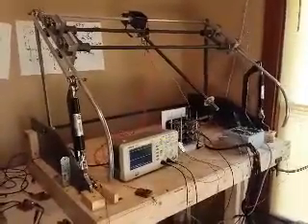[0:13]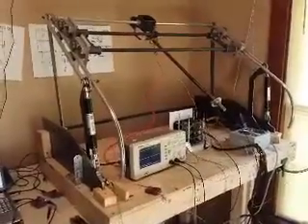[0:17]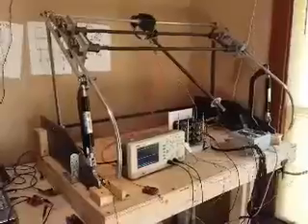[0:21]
Alright, here is our wheelchair lift. It is a prototype at this stage, a fairly good prototype now. It was our senior design project. At the time of our senior design presentation, it worked, but was very lacking in several respects.
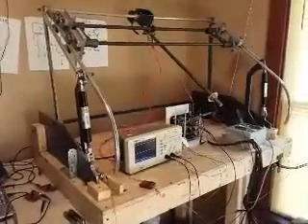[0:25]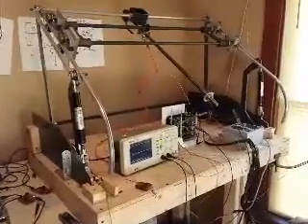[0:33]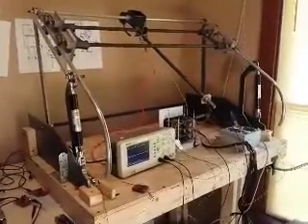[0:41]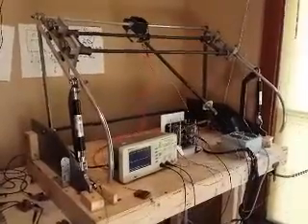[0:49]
After the class was over, it kind of got put away for a bit, but I started thinking about it, and it was troubling me that it wasn't working the way it should have been for as much money as we spent on it. We got funded for this project, and it felt like we needed to make a prototype that actually worked and actually did the desired movement.
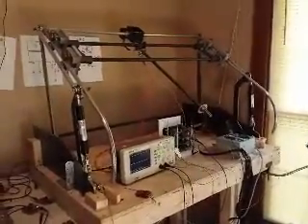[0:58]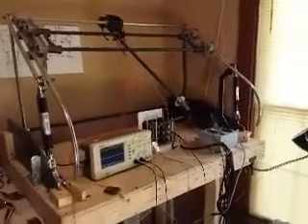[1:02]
During the day of the presentation, I only did half the cycle. Now it is capable of doing the entire loading and unloading cycle. I'll go through that in more detail.
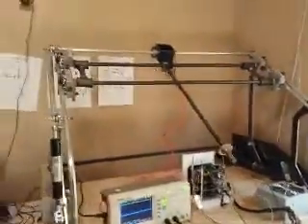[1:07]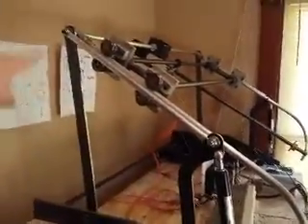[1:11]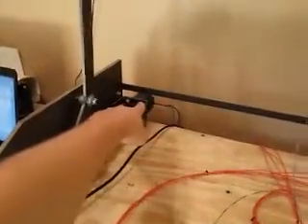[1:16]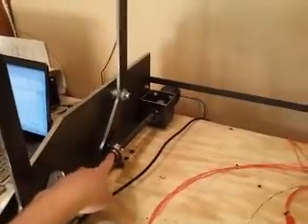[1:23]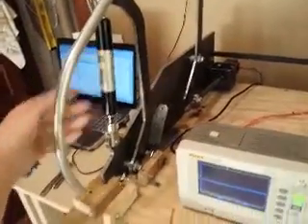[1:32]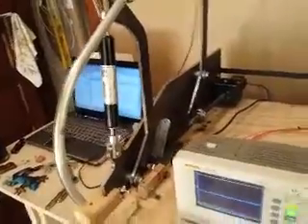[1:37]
So basically, let's get familiar with the components here. What we have is a 4-bar linkage here that is controlled by that stepper motor there in the back. It turns a lead screw, which is connected to a nut, and that moves this link back here. So this is our input link, and we have a gas spring here assisting the mechanism. We did SolidWorks simulations to position that correctly.
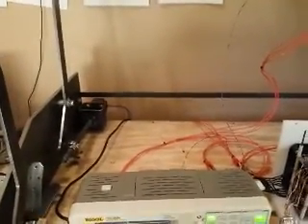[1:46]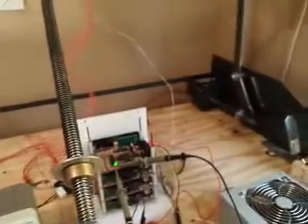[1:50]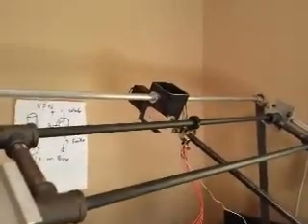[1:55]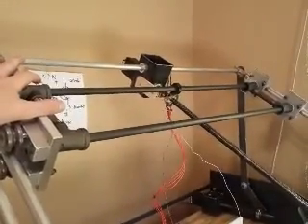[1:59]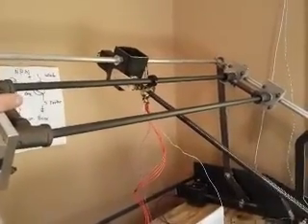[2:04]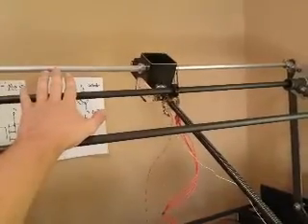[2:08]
So this stepper motor here and this stepper motor here are working off the same, not the same signal, but the same frequency, because they can't work off the same signal because of the calibration that needs to occur. The stepper motor in the back, that one moves this collection of parts, which is where we will attach the wheelchair to.
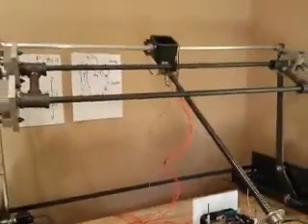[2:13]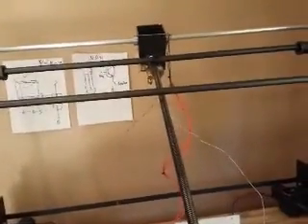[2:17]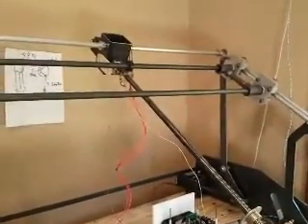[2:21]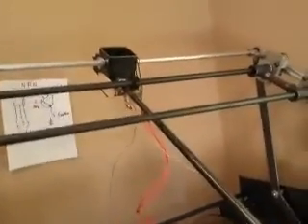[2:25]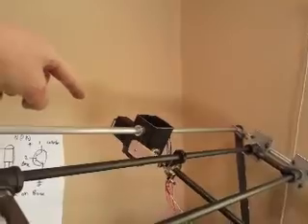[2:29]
That attachment point has not been constructed yet, but this is just to prove that the motion is there, and if someone desired to do so, they could attach a wheelchair to it and get it inside their vehicle. And we have a stepper motor up there, the third stepper motor that actually runs this lead screw here.
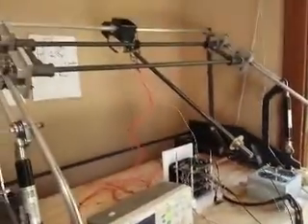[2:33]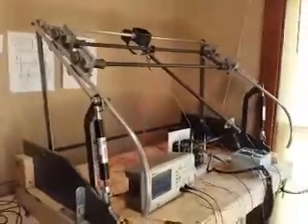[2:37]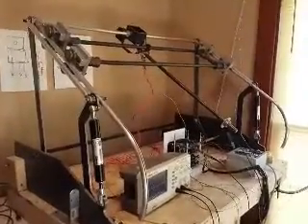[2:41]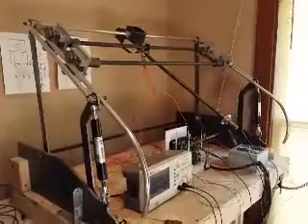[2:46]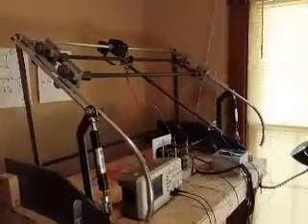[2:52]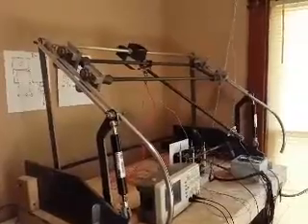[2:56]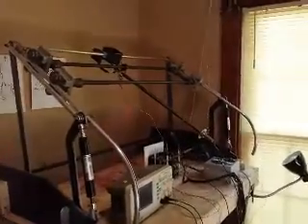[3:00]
Our initial design was not even close to this. We wanted the entire mechanism to take up a lot less space. Using some kinematic analysis, we designed a 4-bar linkage to put the wheelchair through 3 points of motion, but that linkage could not fit inside my Explorer, unfortunately. So we had to go with something like this.
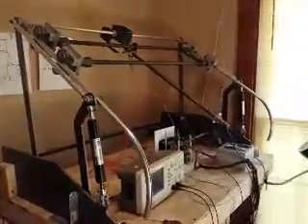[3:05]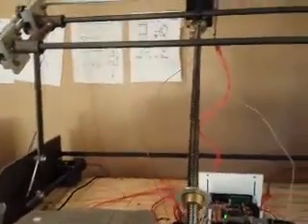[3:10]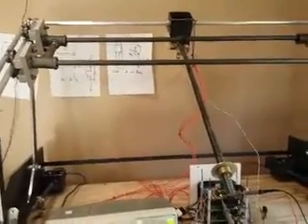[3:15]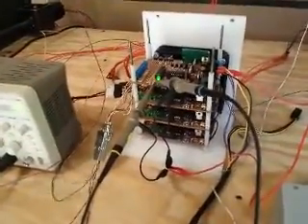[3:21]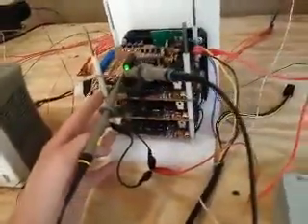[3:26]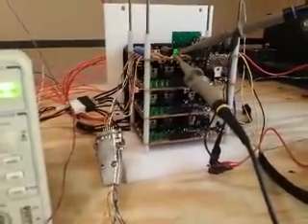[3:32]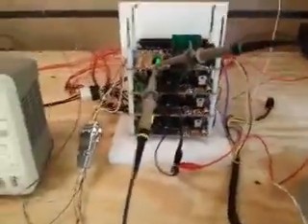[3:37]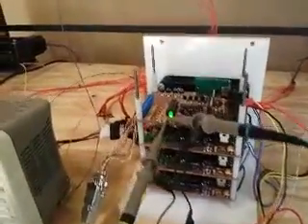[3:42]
So these 3 stepper motors have to work together in order to get the mechanism outside the vehicle so the user can attach the wheelchair, and that's what these boards do. I designed these boards. The 3 bottom ones are stepper motor drivers that I designed in KiCad, and we etched those boards ourselves and assembled the components on them. If you want to know what the schematics are for those, I can attach them to this video.
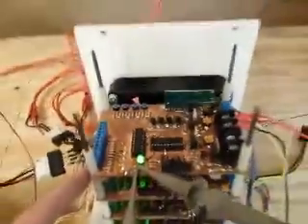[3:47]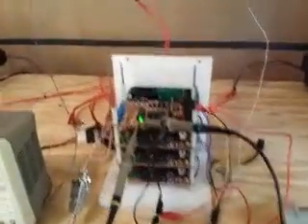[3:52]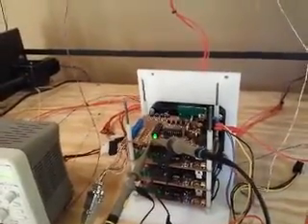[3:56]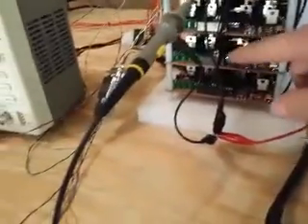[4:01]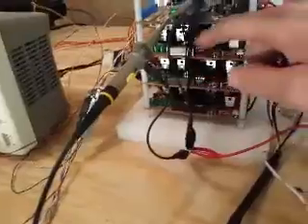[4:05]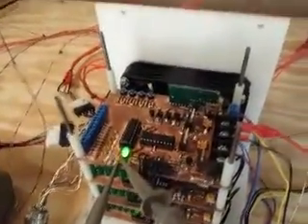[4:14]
And this top board is actually the motherboard. The brains of these boards are the MSP430 microcontroller, the LaunchPad. It's made by Texas Instruments, and it's a nice little part. Anyway, each H-bridge driver has one of these microcontrollers on the board. They're running at 16 megahertz, and they are listening to the motherboard. And the motherboard sends signals to the 3 motor drivers in a coordinated manner.
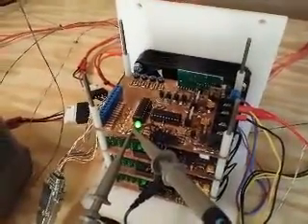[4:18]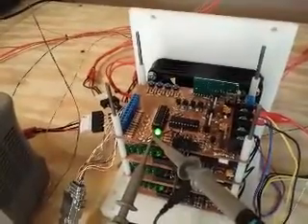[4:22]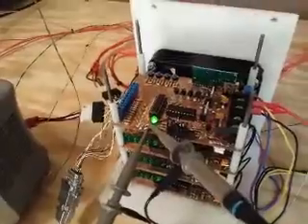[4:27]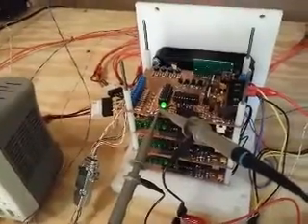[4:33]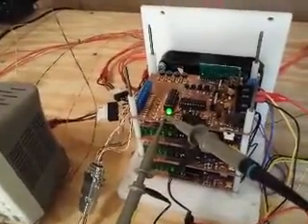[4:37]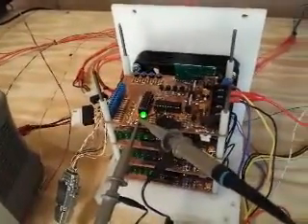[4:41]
It tries to do this without any glitches in there. So at the day of the presentation, we had these guys running at 1 megahertz, and everything worked kind of okay. There were a few glitches, and it turns out that some of the calculations involved in moving this mechanism were actually taking longer than 1 step to the stepper motor.
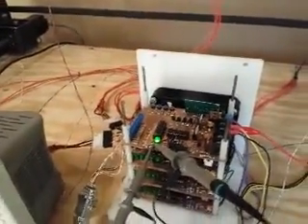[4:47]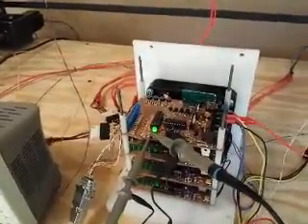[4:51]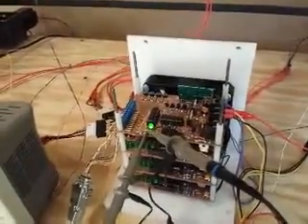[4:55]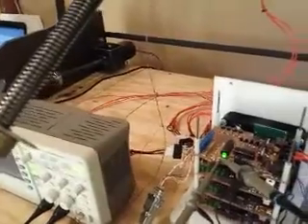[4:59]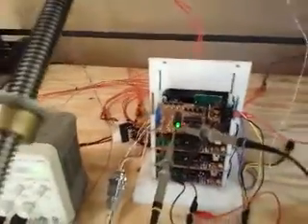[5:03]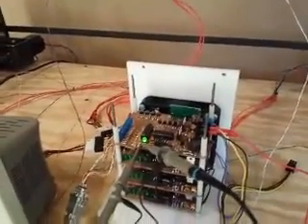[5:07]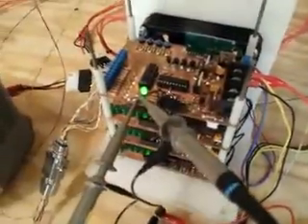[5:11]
So what was happening is a calculation would occur, and the microcontroller would have to do this calculation, but it took longer to do the calculation than to step one of the stepper motors. So it seemed like the program was hanging, and it really was. It was hanging on a calculation. Actually, I think it was a round function and some division and multiplication in there. So I sped these guys up to 8 megahertz, and it seemed to smooth that out a heck of a lot.
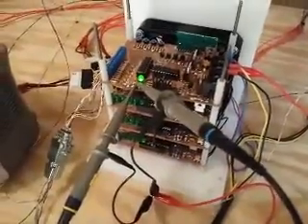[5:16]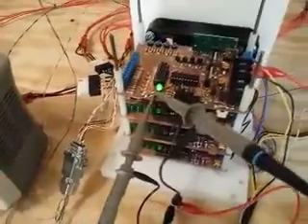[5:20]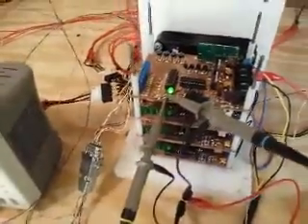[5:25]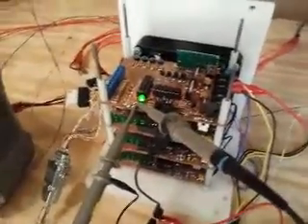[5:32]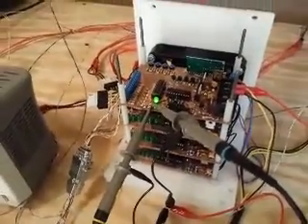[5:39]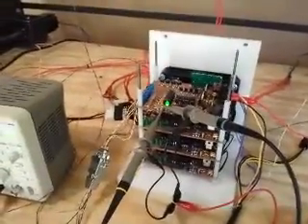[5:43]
The only problem is when I did that, the serial communication between the two of them got changed a little bit. So I started debugging the serial communication, and it seemed like the serial communication was buggy, and it was. And on the day of the presentation, we got lucky that it actually worked, because the latency involved in the program actually allowed the serial communication to occur like it should, but it wasn't actually doing it correctly, which was kind of funny.
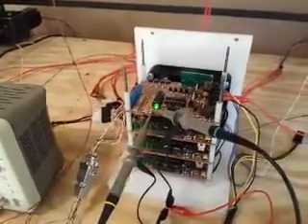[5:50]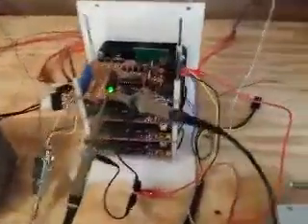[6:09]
So I had to figure out what the heck was going on there and fix that in the software. And it turns out I wasn't even close. Well, I was close, but there were some tiny changes that had to occur in order to get the serial communication working correctly. And we'll take a look at the serial communication on the oscilloscope here in a second.
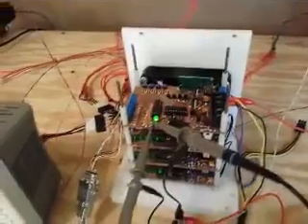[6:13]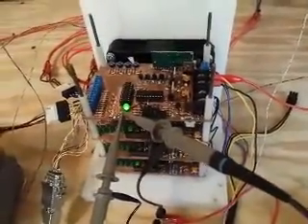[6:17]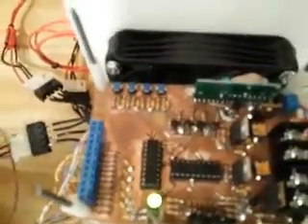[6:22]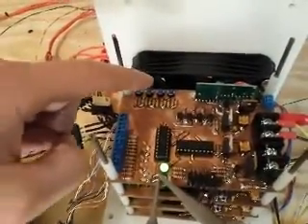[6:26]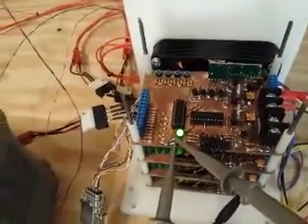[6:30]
So it's all fine and dandy that we can control the mechanism, but we need to have the user have some input. And in order to do that, there's 4 buttons back here. These are the manual controls that the person could push and it'll move the mechanism. Those are sort of for debugging, and I don't even use those anymore.
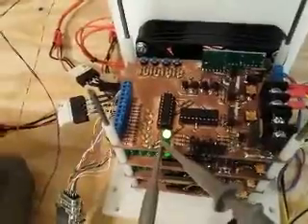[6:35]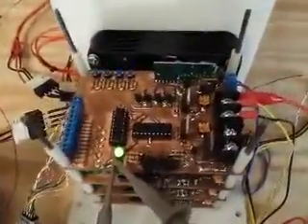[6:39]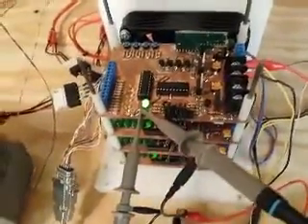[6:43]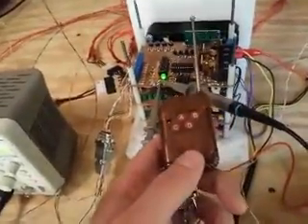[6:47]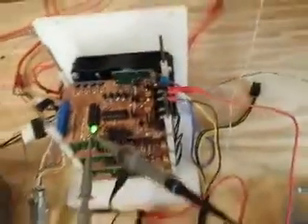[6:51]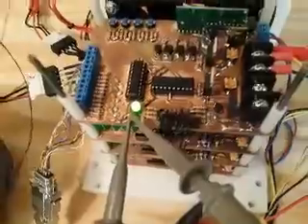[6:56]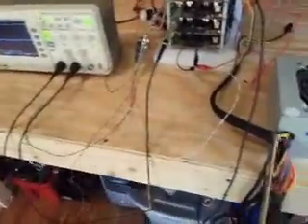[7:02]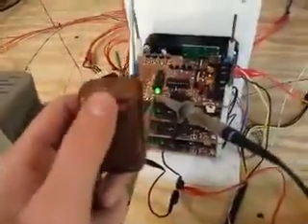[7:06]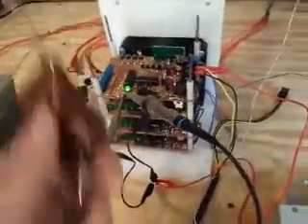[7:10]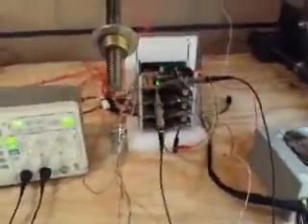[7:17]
We wanted to be able to do it on board, and we also wanted to be able to do it remotely, and we did that with this wireless transmitter. I purchased this and this board, but everything else we assembled ourselves. So this radio, at this point, has only 2 functions, up and down, and calibration, I guess, but only 2 buttons actually do anything. The other 2 I haven't written any program for, and that's fine. They could be used for something else that hasn't even been thought of yet. So there's room for programming improvement for sure.
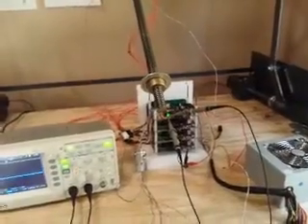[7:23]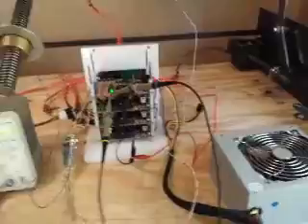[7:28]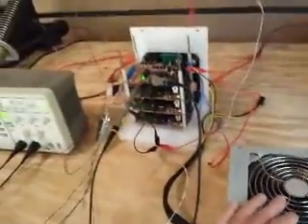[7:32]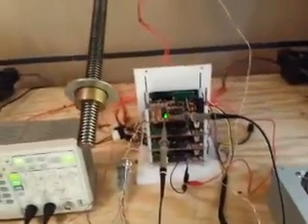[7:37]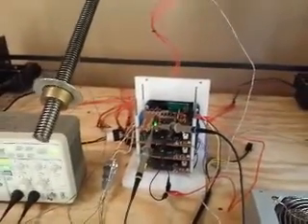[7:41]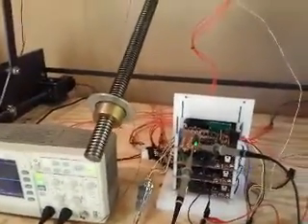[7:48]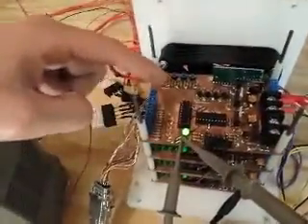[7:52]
Anyway, when you boot up this thing for the first time, say we connect it to the car battery. This is around a 12-volt power supply. This mechanism has no idea what's going on. It just got brought to life, and it doesn't know where it is. So the first thing it should do when the user wants it to do something is check where it's at. And it does that through the serial communication between these 2 chips.
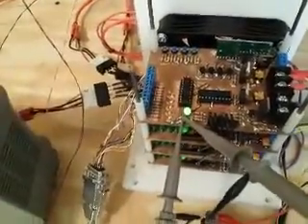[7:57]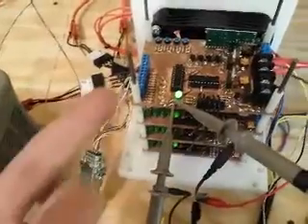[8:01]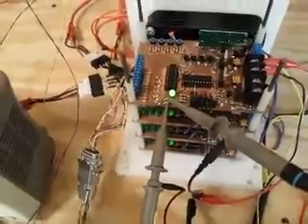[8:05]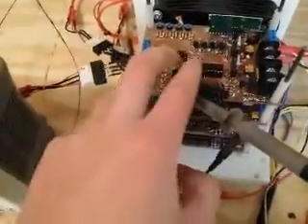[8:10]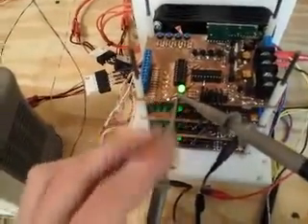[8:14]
The reason there's 2 chips on here in the first place is because we didn't have enough pins on the microcontroller that I was familiar with to get everything hooked up. So we had to use 2 chips, and these 2 chips are talking to each other through the whole cycle, and they're very closely tied together.
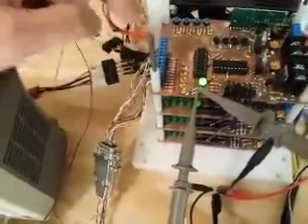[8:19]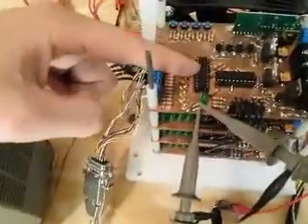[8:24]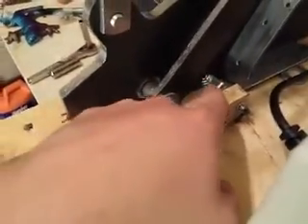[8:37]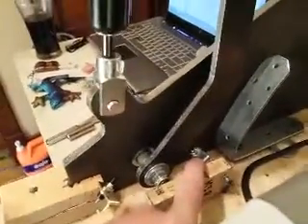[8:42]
So this microcontroller here, I'm going to turn this off real quick so I don't shock anything, is listening to this pin out here. This goes through a DB9 connector, and it goes to some limit switches. As you can see, here's a limit switch and a limit switch right there. At this current moment, the wheelchair lift is in the loaded position and is touching off right there. There's also one up here on the top, a limit switch right there, and limit switches over here too.
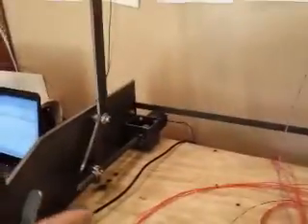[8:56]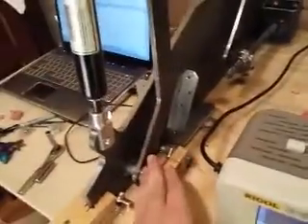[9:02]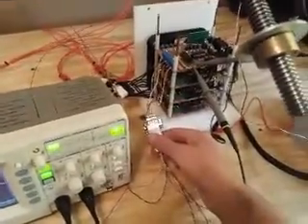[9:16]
That's why we need these 2 stepper motors to be going on the same frequency, but they need to have separate step signals, because during the calibration phase, what we're doing is touching off, and if this one touches off, it needs to stop that motor, but maybe that one needs to keep going until it touches off too, and then everything is square and lined up. So it's listening through here for the switches, and it's listening through here for the user input.
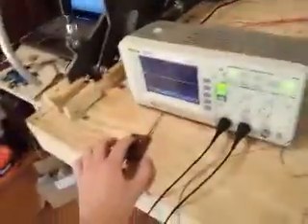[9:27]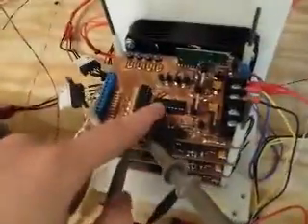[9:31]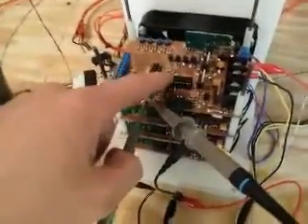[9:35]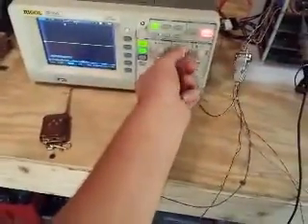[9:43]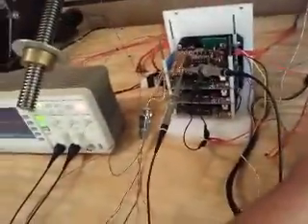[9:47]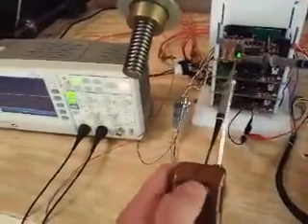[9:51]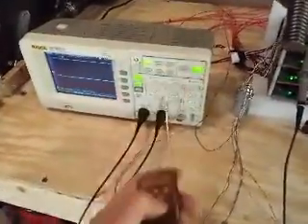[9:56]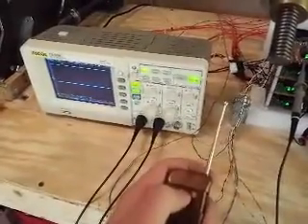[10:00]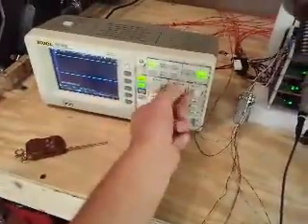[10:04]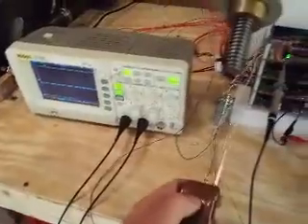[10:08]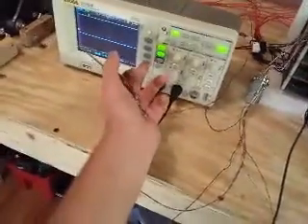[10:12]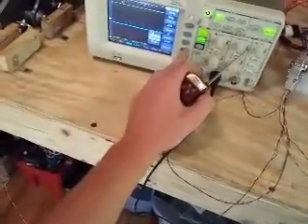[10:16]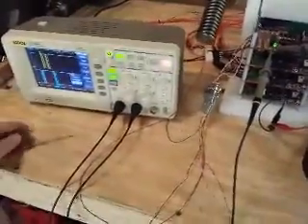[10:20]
Once the user pushes one of these buttons, this chip needs to figure out where the mechanism is, and so it sends an information byte. Here, I'll show you real quick. I will attempt to load the mechanism, but since it's already loaded, it won't do anything. Come on. Oh, that's why. Let me set up the, let's do a single. Okay, there we go.
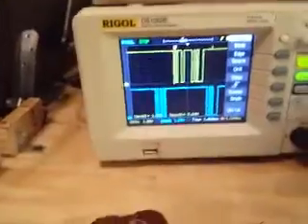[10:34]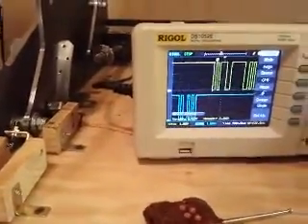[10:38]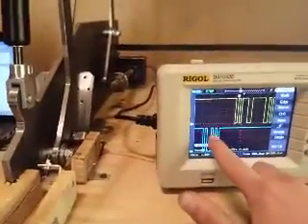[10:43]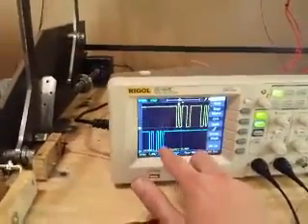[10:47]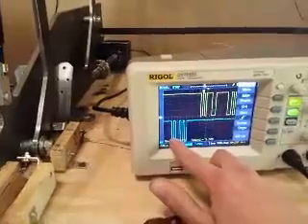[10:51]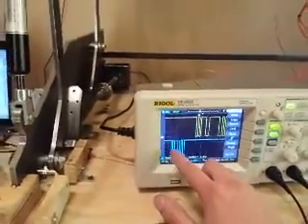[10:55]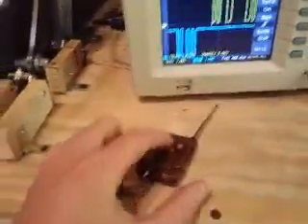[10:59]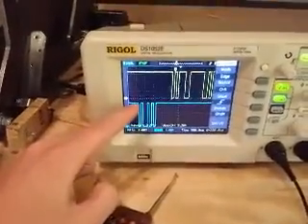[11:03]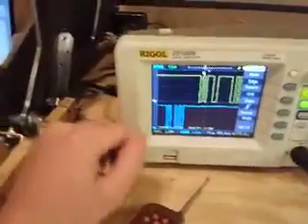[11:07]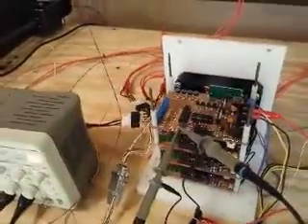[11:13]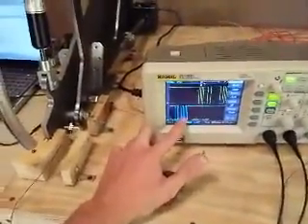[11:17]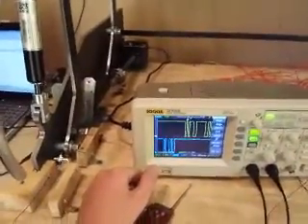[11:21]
Okay, so what happens when the user pushes the button is we got this going on inside the system. This is going to be the main processor, and this is going to be the switch monitor, the limit controls. Everything's kind of just sleeping until something happens. As soon as a person pushes A or B or A or C on this, it triggers this, which is 1 byte of information. This byte is associated between these two controllers as kind of an address byte. So it says, hey, I want this piece of information.
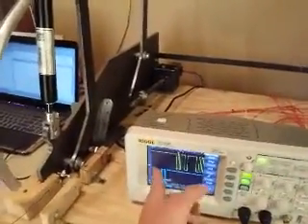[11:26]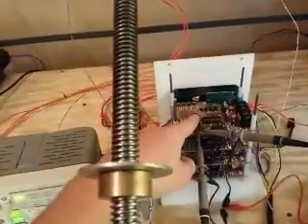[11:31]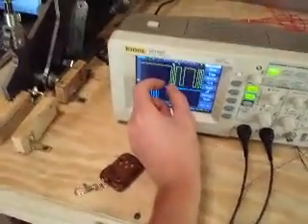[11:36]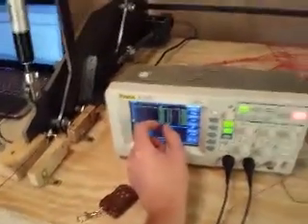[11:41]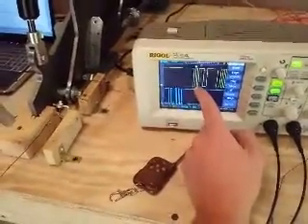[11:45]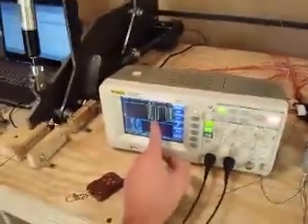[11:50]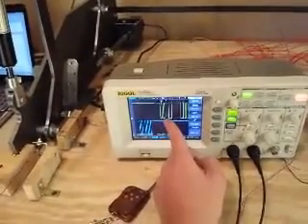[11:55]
It turns out this byte means I want to know where the limit switches are. So first, this guy sends it, and this guy listens to that, and that's what this delay is right here. It's listening and also checking where the switches are. And then it sends this, which is kind of an address byte that both of them are familiar with, and it says, hey, the next piece of information is where the limit switches are.
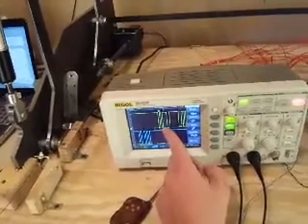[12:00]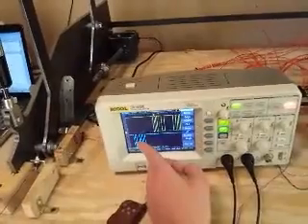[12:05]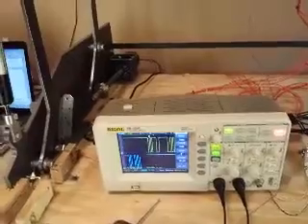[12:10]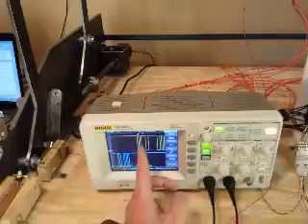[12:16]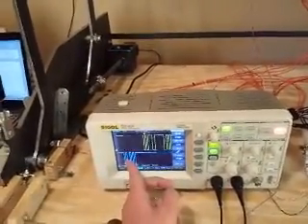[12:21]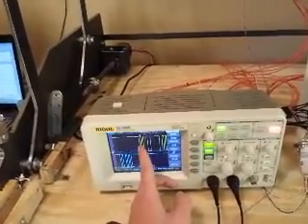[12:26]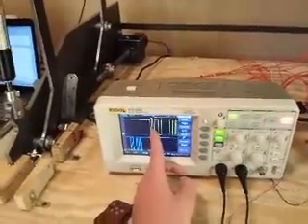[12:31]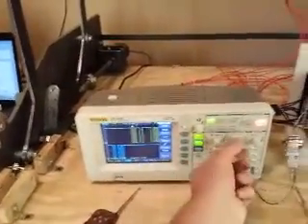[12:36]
And the reason we have to have this is because what if the buttons are touched but someone didn't push a button? As in, what if we're loading the wheelchair mechanism and it's becoming inside the cycle? The main processor needs to know what is coming next every time in case it isn't actually directly asking for it. So in this case it's asking for it, but this is always there in case it isn't aware of what's going on. And so what will happen is the switch monitor will always tell it whenever these switches change
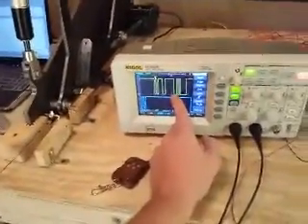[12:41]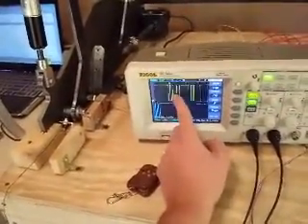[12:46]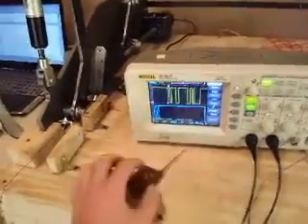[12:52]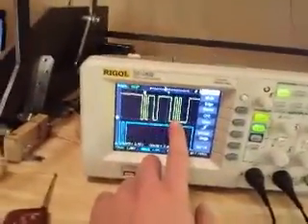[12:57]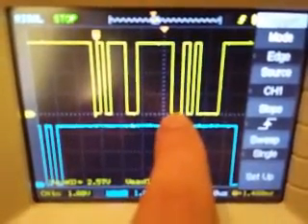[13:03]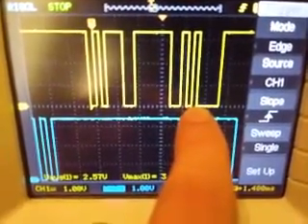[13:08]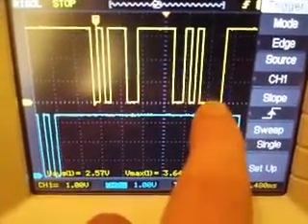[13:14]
position, no matter what. And what happens here is, at the time of this occurring, we only had 2. So here is the lead-in information, and then here's the actual information on the switches. And at the time when I pushed this button, it turned out there were only 2 switches that were on, and so it probably moved a little bit. But here's the start bit, and then the first one is on, and then the second one's off, and the third one's on, and then usually there's one right there, but it did not show up.
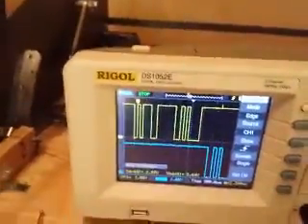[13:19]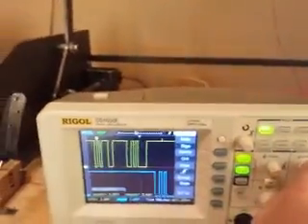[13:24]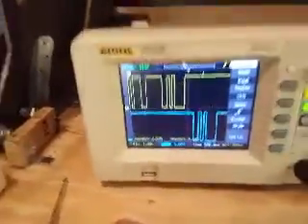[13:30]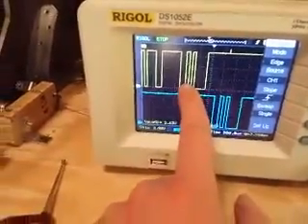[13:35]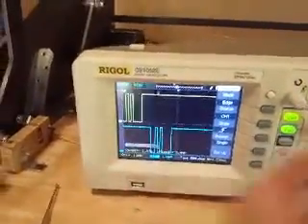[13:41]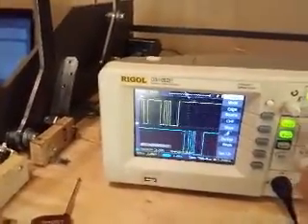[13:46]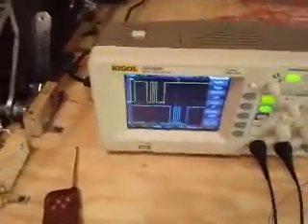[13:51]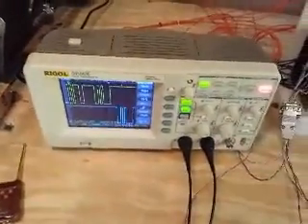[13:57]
But then, that information is good and all, but what if this main processor is doing something, or something terrible happens and it doesn't actually read it correctly? What it does is it echoes it back, exactly what it heard. But if there was a transmission error, it'll echo back something incorrectly. And if that were the case, this would repeat. It would repeat doing this until the information was correct. And then it would just kind of coast until something else occurred. So that's the error checking within the serial communication.
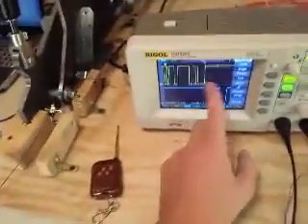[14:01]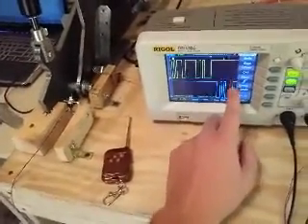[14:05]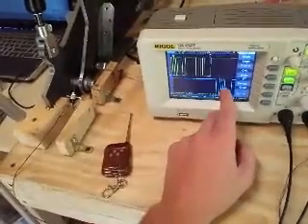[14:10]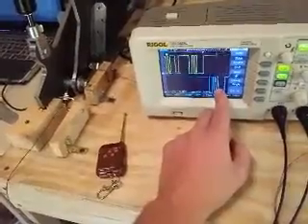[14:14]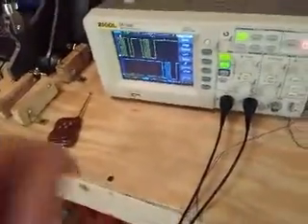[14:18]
And we need to have that in case it sends it and it replies back incorrectly and then it just doesn't do anything. Well, that would mean that it's going to do something that this guy doesn't intend to do. So it's reacting to stuff that isn't true in the real world, and that would be bad, causing the mechanism to break or something like that. So that's the serial communication between just these 2 chips.
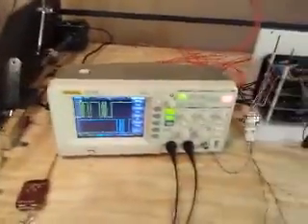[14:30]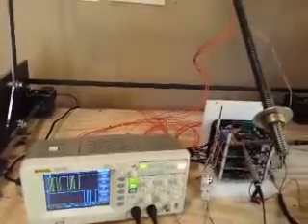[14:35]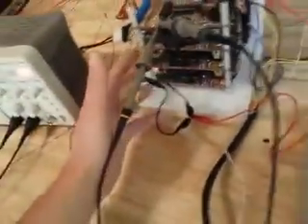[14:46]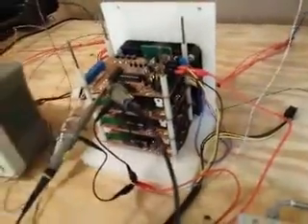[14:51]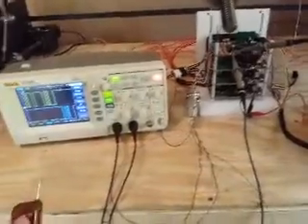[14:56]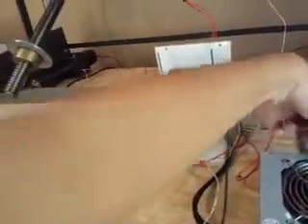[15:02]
So then if that information is correct, and if the main processor thinks that it can actually do something, it makes sense to move it out of the vehicle. Like at the time, it didn't make sense to move it into the vehicle because it was already at this position, but it would allow it to fall out of the vehicle. And then it would turn on these 3 H-bridge, double H-bridge stepper motor drivers, and then start sending them signals to turn. So let's do that. Show the full cycle.
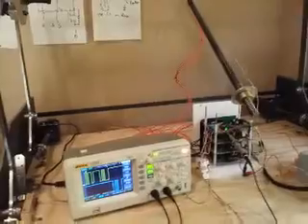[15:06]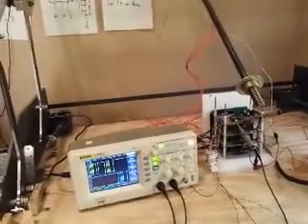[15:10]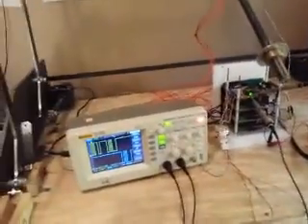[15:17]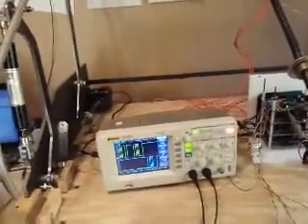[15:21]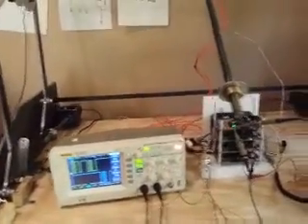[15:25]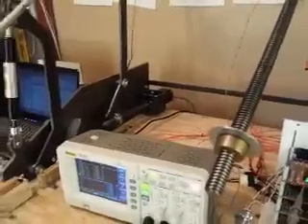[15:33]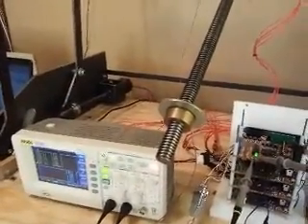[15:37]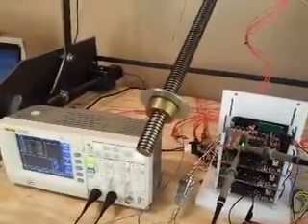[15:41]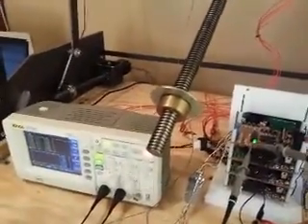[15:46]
So we'll turn it on. Okay. Now let's see if this guy will work. It's kind of loud, but it would help if these stepper motor drivers had micro stepping, which I did not know how to do at the time. Turns out I kind of understand it now, but all that software was written by me, so sucks if I didn't know how to do it, right? So they're loud because they're doing just full steps, 200 steps per revolution, and they're only running at 12 volts, so the inductance inside the motors is a lot to overcome for this little 12 volt power supply in order to get them up to peak torque, and we need that peak torque in order to move this mechanism because it is kind of misaligned, and these bearings down here should not have been there, but they were.
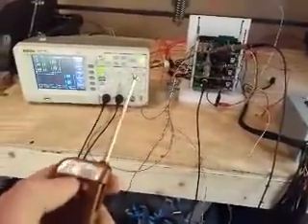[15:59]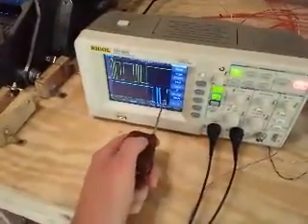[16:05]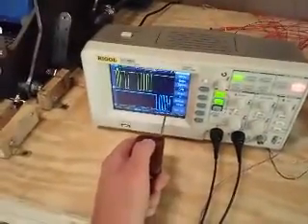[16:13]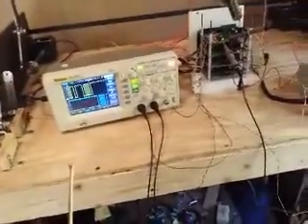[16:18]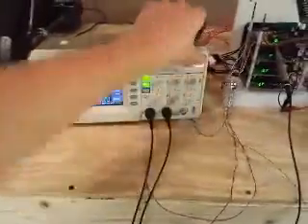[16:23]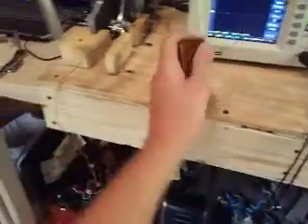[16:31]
Anyway, let's try and load it into the vehicle first. Nothing should happen. Well, it did, because it wasn't fully calibrated. As you can see here, it wasn't calibrated completely. And now we'll run it again, and it looks like it's calibrated. We have all 3 limit switches connected, so that's good. Now it is capable of unloading out of the vehicle, but not loading. So let's see here. We'll try and load it in the vehicle. Nothing. Okay. Let's unload it. And we'll wait for the next one to hit when it hits bottom.
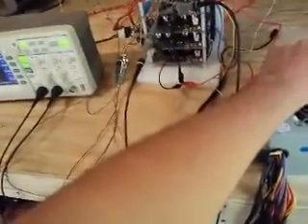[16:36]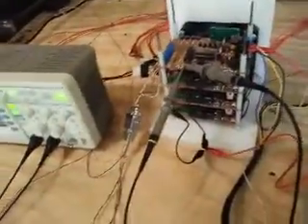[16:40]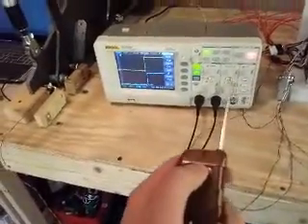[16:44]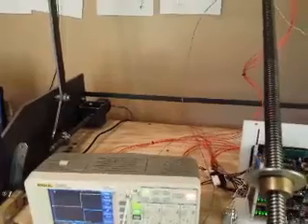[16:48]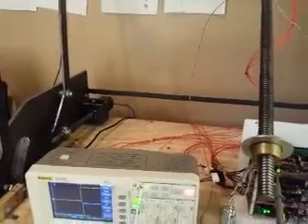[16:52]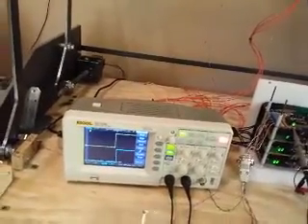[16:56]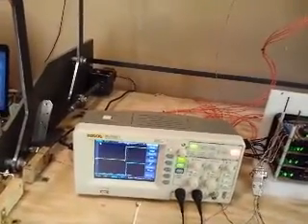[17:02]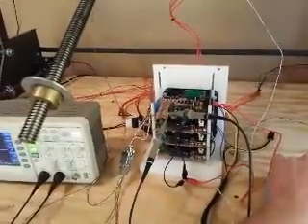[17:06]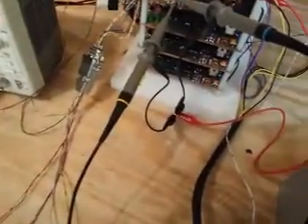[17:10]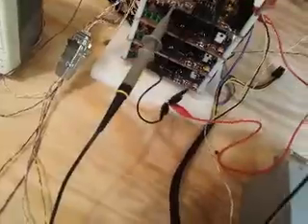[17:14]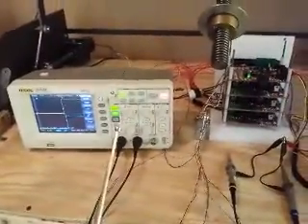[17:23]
Oh shit. Why did it do that? I think I need to take these off. Well, let's see what happened here. I'll try and recalibrate it. So we're going to go to the top now. Okay, now we're at the top. I'm not sure what just happened. We'll try it again. Never seen that before. Well, I am unaware of what that could mean. I'm going to take these off, see if that has something to do with that. Try and recalibrate it to the top.
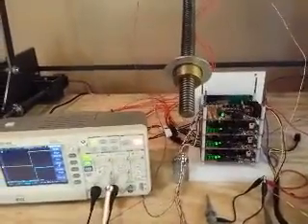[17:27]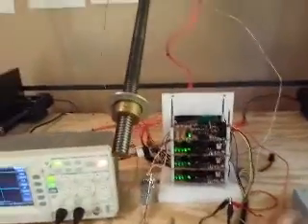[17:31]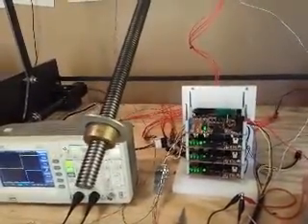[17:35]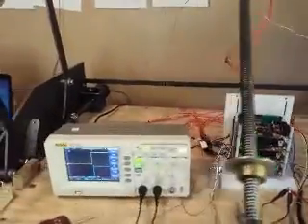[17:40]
Okay. I think those were causing the problem. I don't know why that would be. That's weird. So it's unloading out of the vehicle right now. What the heck? Well, I'm going to figure this out and continue.